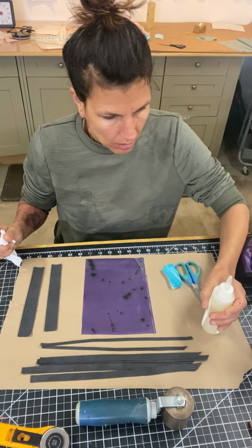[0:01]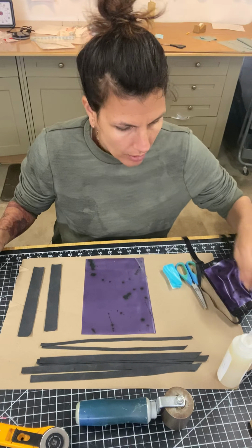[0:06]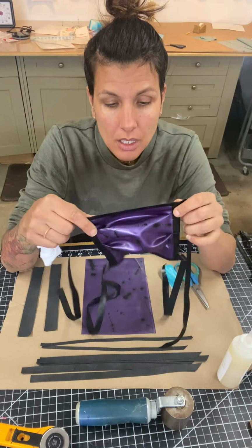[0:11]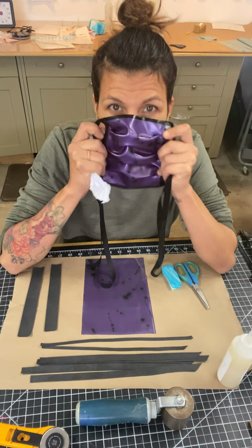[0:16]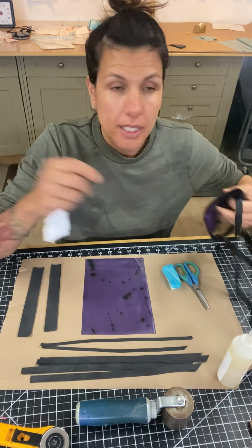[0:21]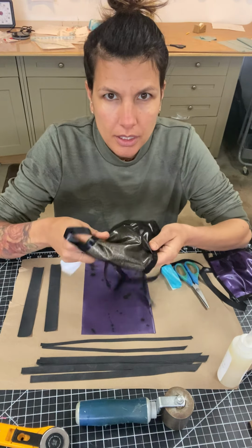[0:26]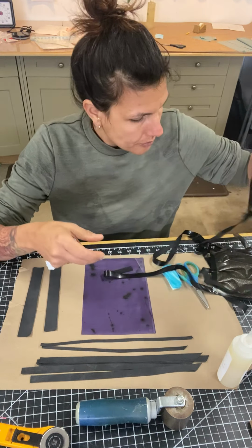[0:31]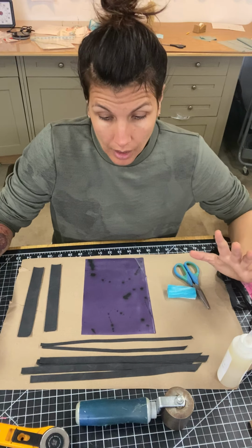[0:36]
Hi guys, I am going to walk you through how to make one of our medical masks, which I do sell on our website. It's a product that I've had for many years, but now everybody is in need of one. On our website you can pick any color. There's a glitter one, pink marble, but for those of you crafting, I'm going to show you how to make one on your own.
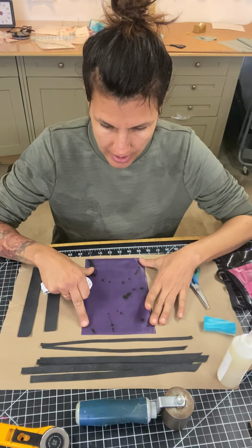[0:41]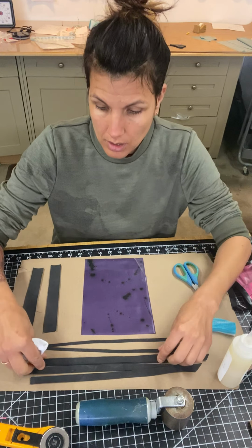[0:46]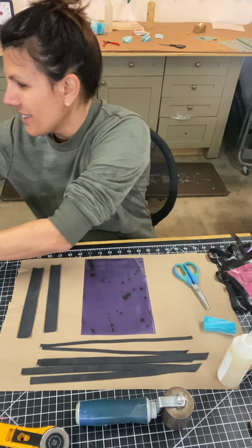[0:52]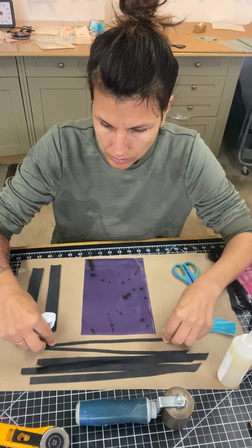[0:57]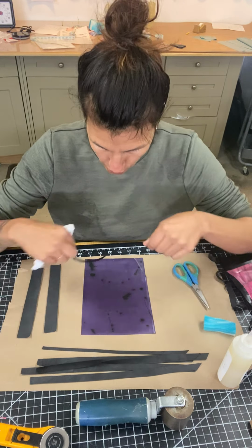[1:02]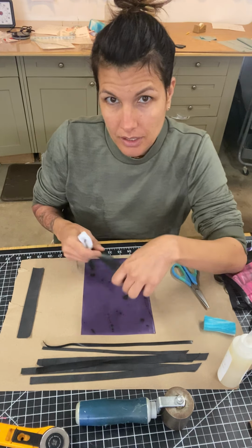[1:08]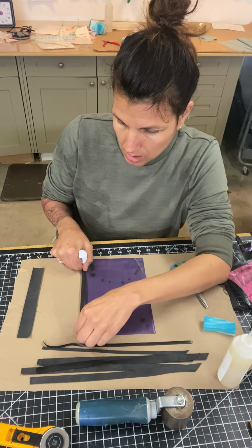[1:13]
What you need is a piece of latex that is approximately 8 to 9 inches by 6 inches, and some strips for the straps. These are 1/2 inch by about 12 inches, and you need 4 of those. I trim mine out just because I want it to look pretty, so I have 1/4 inch trim that's going to go on the top and the bottom. And then we're going to pleat this, so I'm also going to have a 1 inch strip that I will sandwich in the pleats.
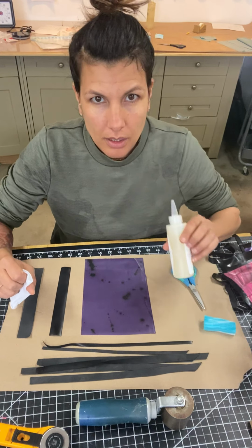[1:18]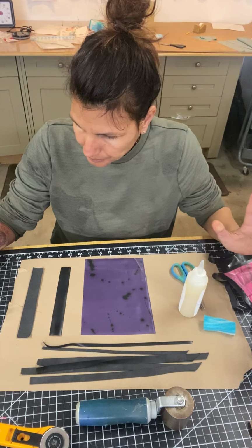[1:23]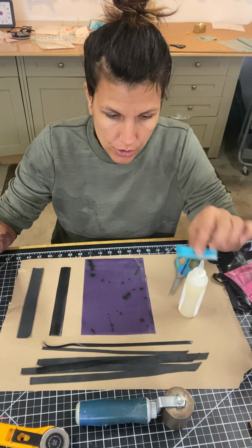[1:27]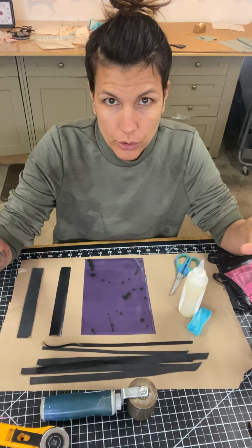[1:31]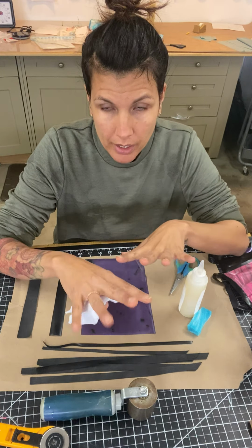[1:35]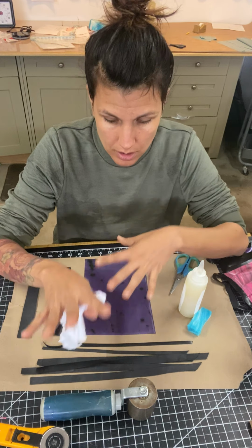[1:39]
You also need some latex glue, which I do sell on the website, scissors, a paintbrush or sponge, and some sort of roller. I do have a how-to video on the basics of gluing and repairs, so you can watch that first, but this video is just how to construct one of these.
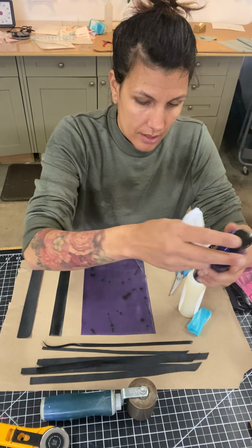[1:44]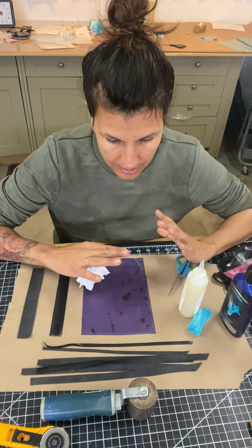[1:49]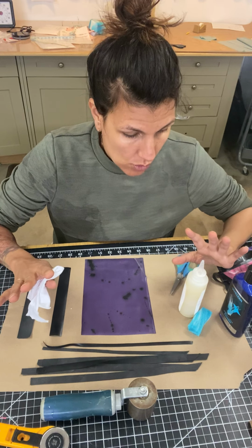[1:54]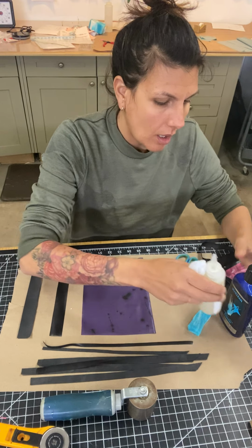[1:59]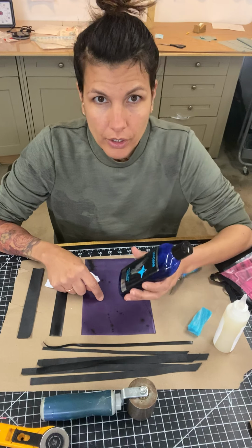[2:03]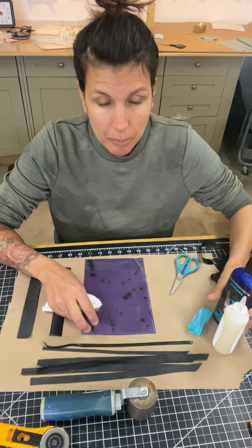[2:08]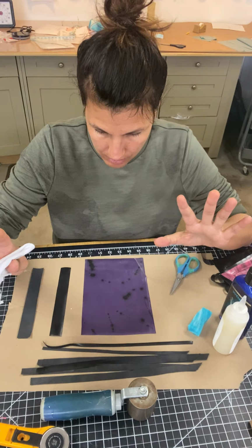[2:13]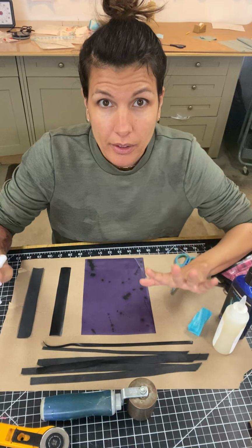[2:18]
Another good thing is this is all latex, which is a medical grade latex. It's the same factory that makes any kind of latex or rubber for fitness, medical use, fashion. And the good thing about latex is that it can be washed. There is an antibacterial wash that you can use on the latex, so these masks are reusable. Now, I am not going to say that this is going to protect you from everything, but it's better than nothing.
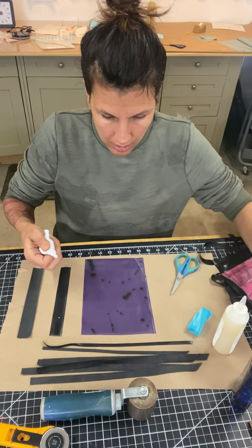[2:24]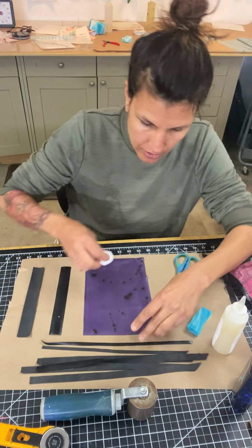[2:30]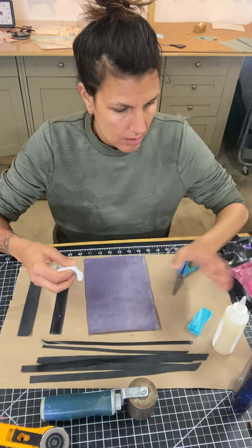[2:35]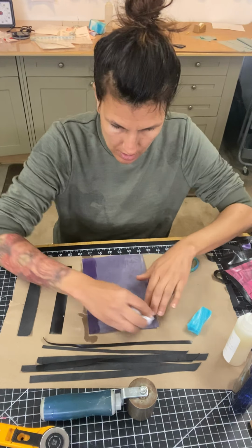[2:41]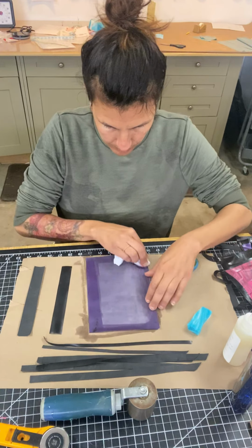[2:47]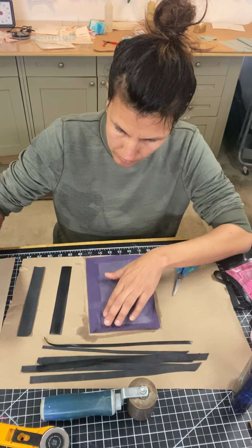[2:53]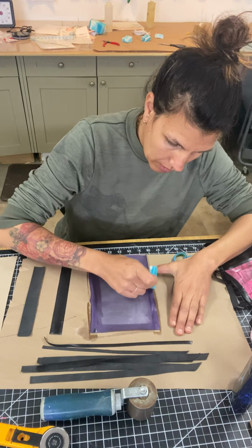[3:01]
So here we go. You're going to want to clean the seams. Anywhere we're going to glue, we're going to clean it. I use acetone. You can use raw acetone, rubbing alcohol, anything that cleans the surface and gets all the powder off of the latex itself. And then I'm going to put my glue down. On the 6 inch side, I'm going to do a 1/2 inch seam of glue on each side.
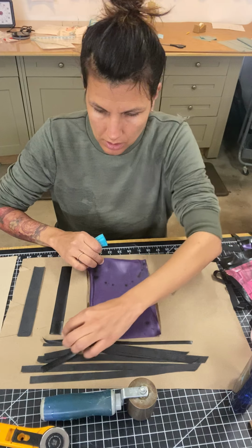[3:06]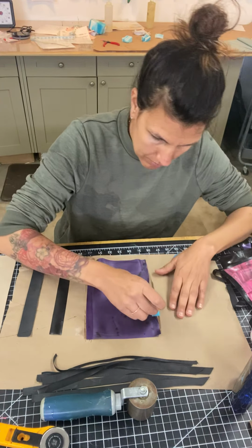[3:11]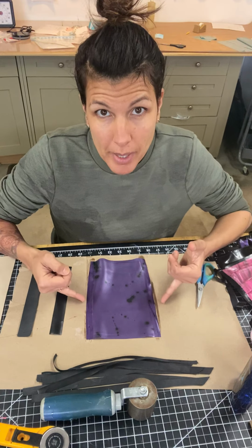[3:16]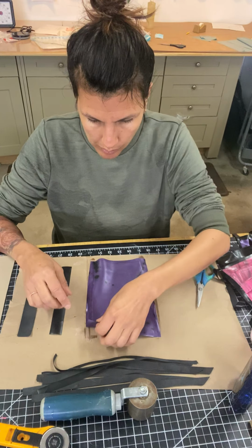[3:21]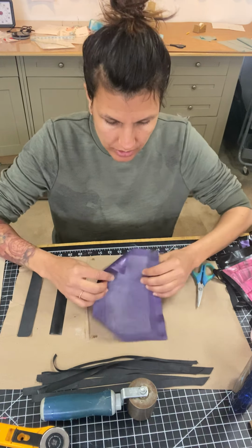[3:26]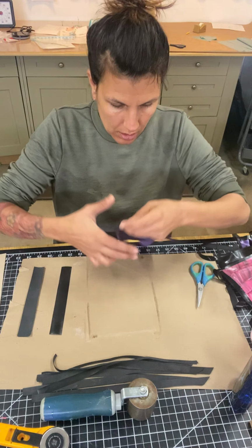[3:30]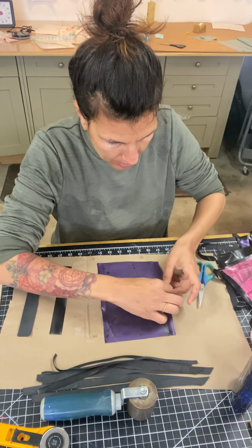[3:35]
And then I'm going to flip it over and do the same thing. So now the 6 inch side has glue front and back, and that's where we're going to do the pleats for the mask. Once it's not wet, but still tacky, I'm going to find the middle, and I'm going to put my first pleat just above that. You can mark it with a pencil. I just eyeball it.
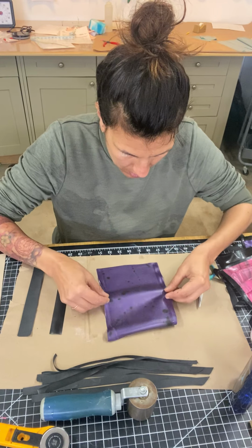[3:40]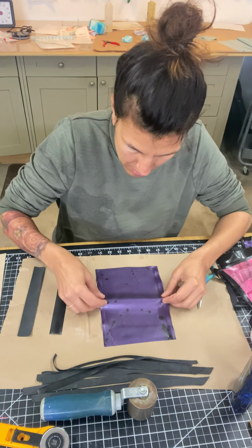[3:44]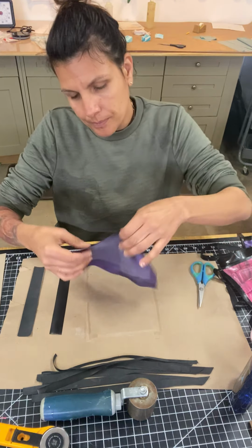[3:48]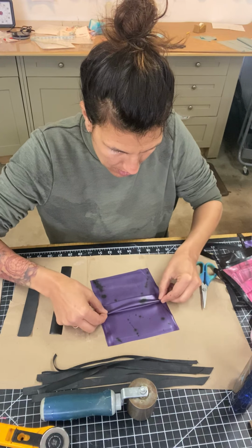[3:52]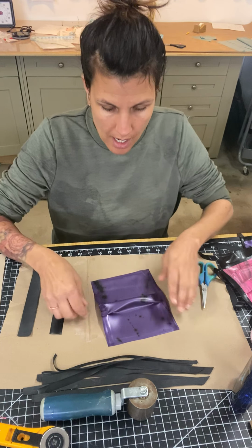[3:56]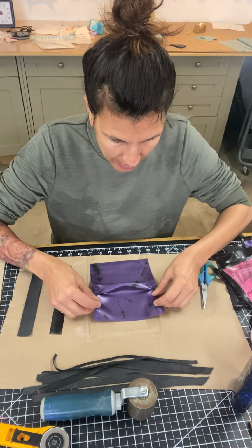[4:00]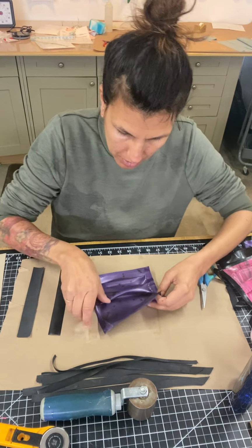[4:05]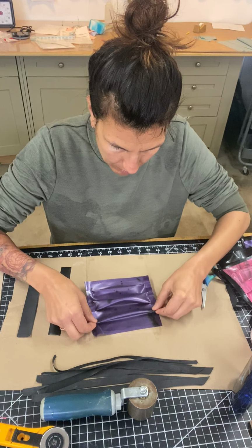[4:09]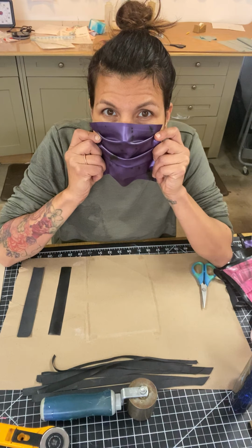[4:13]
I do maybe a 1/4 inch, 1/2 inch pleat, and I do them going towards the bottom and the top. Then I do one above that and one below. And now we have our pleated mask that we can put trim on.
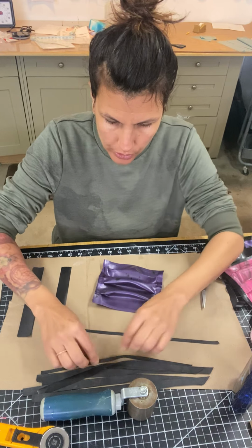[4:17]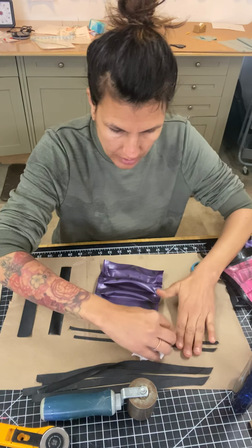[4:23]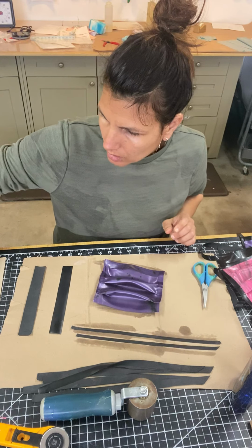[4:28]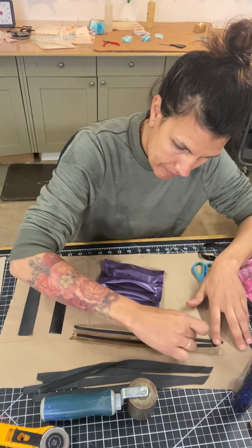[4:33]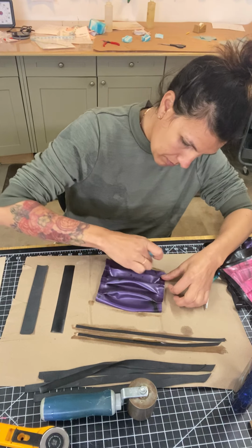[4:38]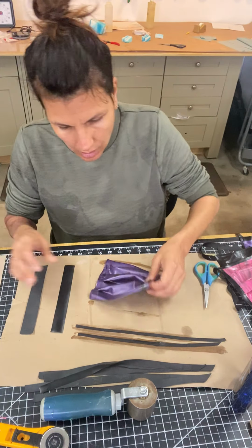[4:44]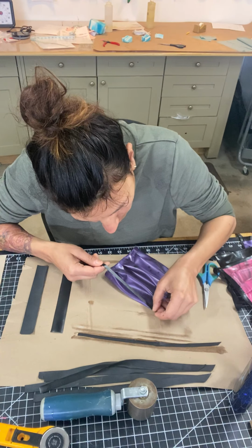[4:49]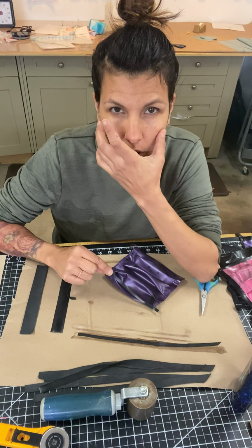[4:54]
So I'm going to take my 1/4 inch trim. I'm going to clean the surface that I'm going to use to glue it. Some more glue. Apply the glue to the trim, and then apply the glue to the mask. I'm going to place this down in the corner, and I'm going to pull a little bit, which will help the mask shape to your face.
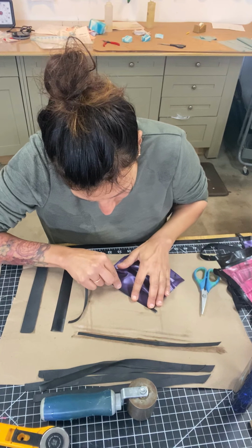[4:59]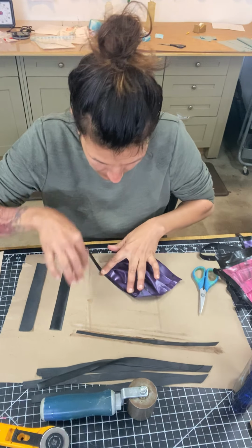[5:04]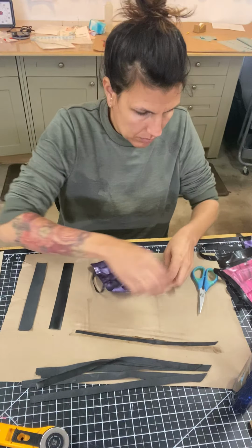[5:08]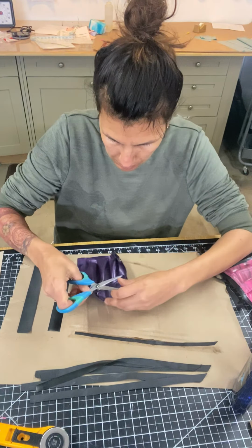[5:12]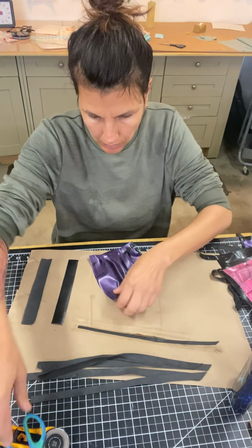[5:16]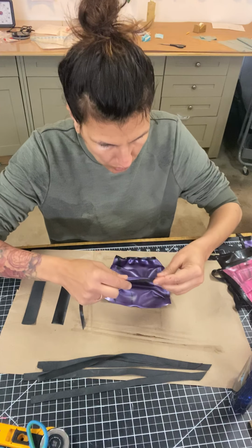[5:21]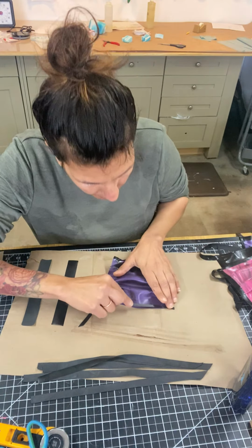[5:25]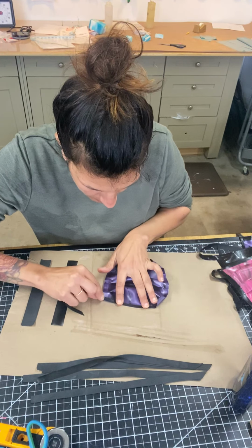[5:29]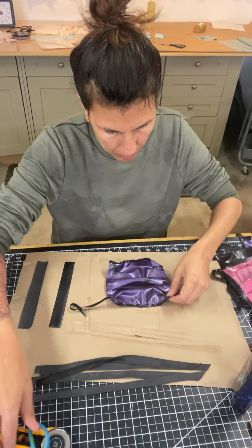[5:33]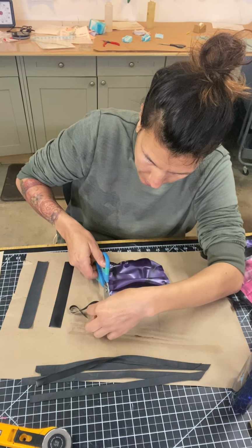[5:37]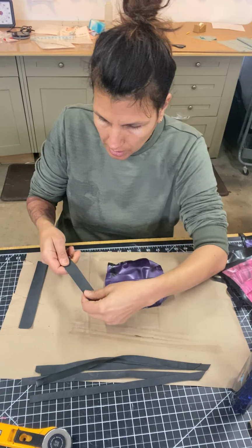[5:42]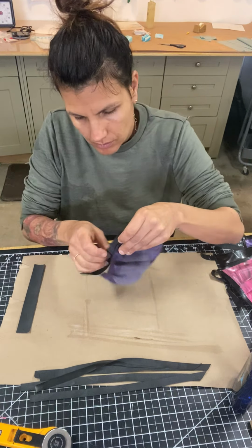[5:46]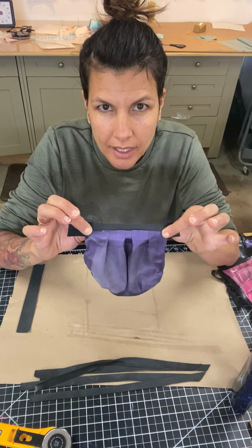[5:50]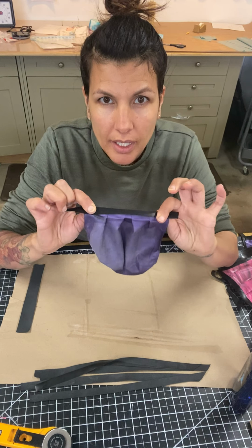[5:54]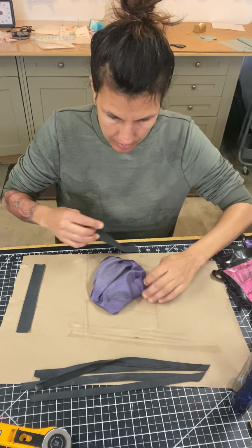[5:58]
Then I'm going to roll it and trim it. Same thing for the bottom: 1/4 inch trim, pulling slightly, trimming it clean. And now I'm going to clean and glue my 1-inch strip so it overhangs, covering the pleats, and then we are going to fold it over and cover both the front and back of the pleats.
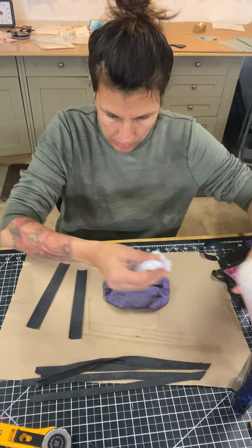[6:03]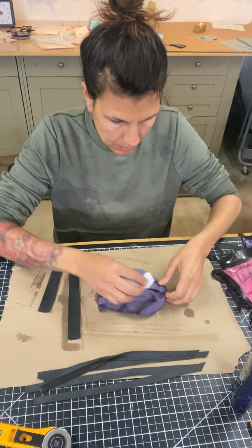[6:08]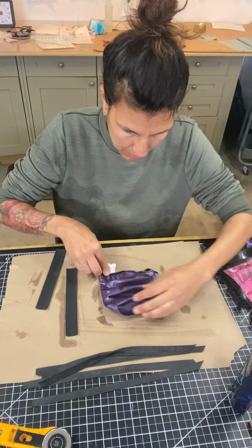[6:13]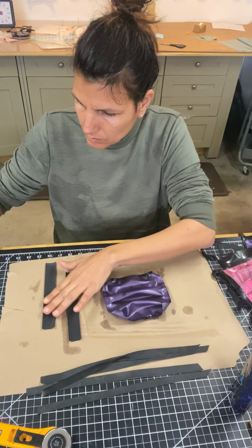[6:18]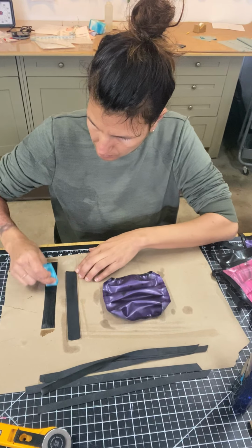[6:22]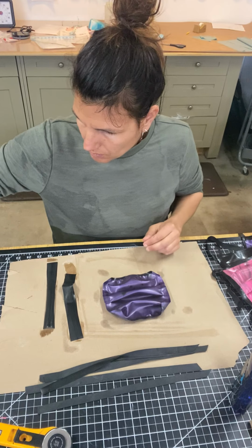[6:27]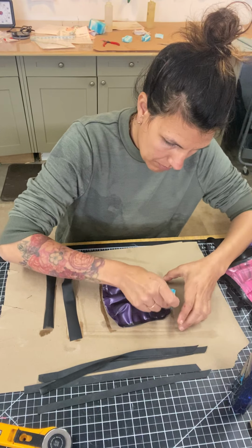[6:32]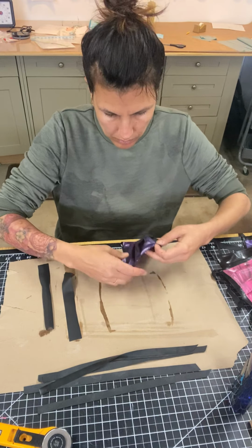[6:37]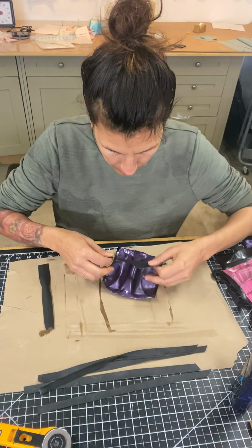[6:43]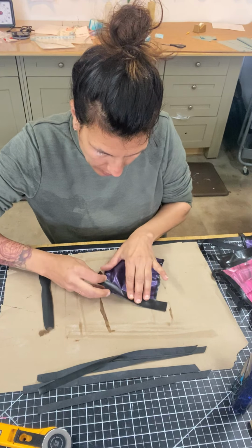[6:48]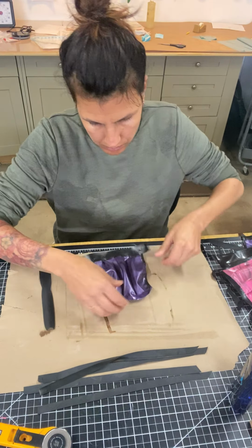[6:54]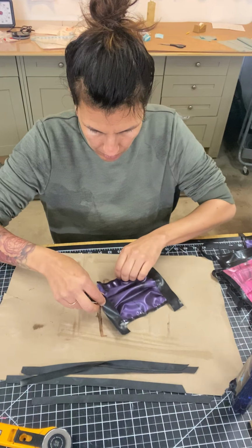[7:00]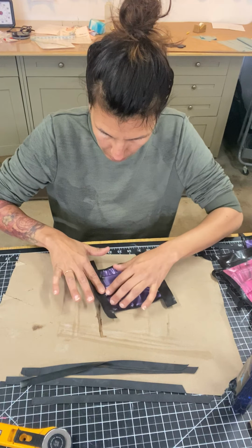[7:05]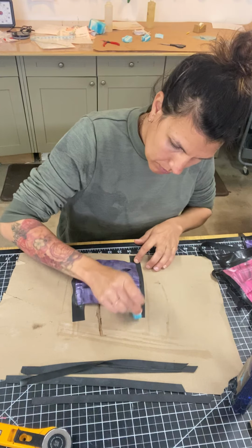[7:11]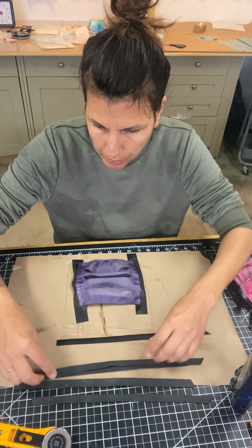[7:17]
All right. So I'm going to take my 1-inch strip, cover the front where the pleats are, fold it over, place some more glue, and then now I can prep my straps.
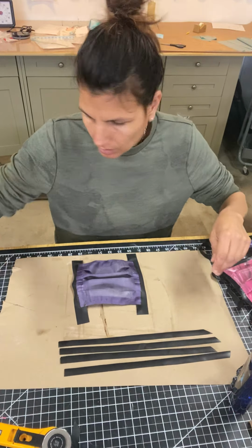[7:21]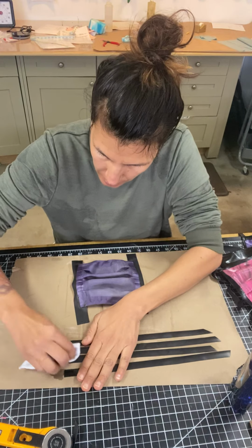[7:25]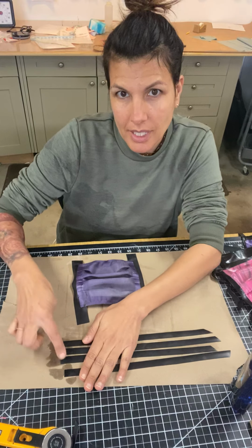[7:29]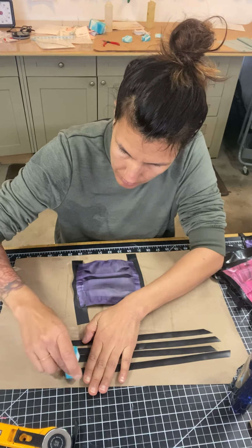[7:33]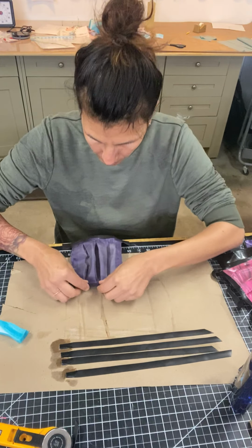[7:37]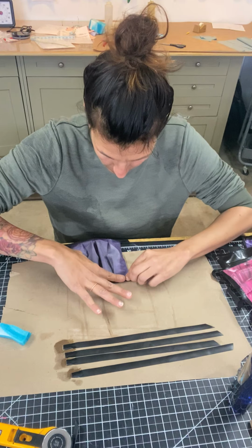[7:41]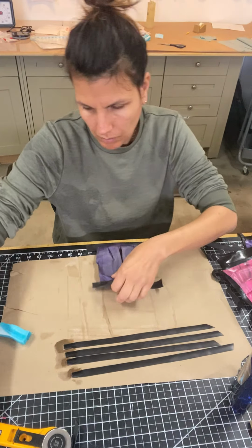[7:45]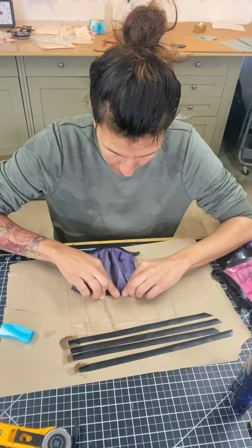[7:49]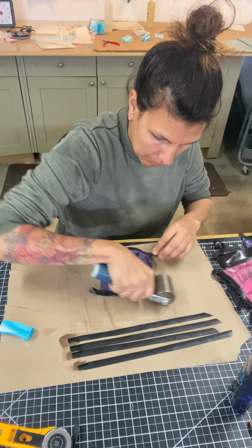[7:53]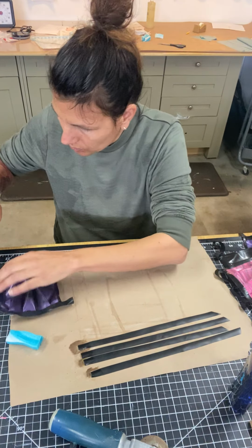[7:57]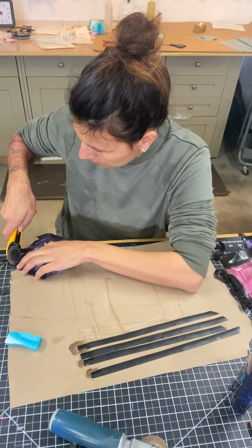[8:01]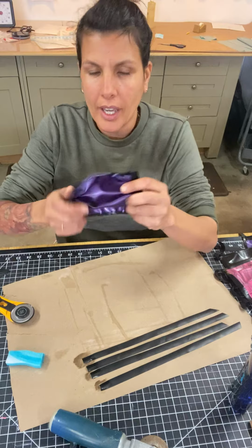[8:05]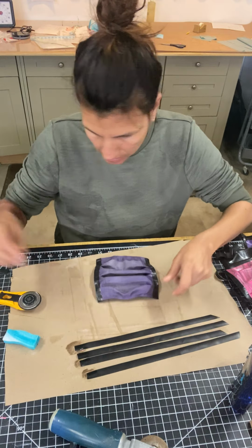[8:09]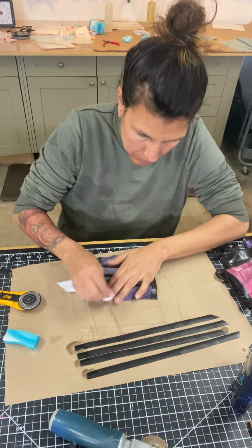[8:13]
What I want to do is clean and then glue where I'm going to be attaching it to the mask. I'm going to trim that clean so it's flush. So now I have the mask, and I'm going to attach the straps, and then we're done.
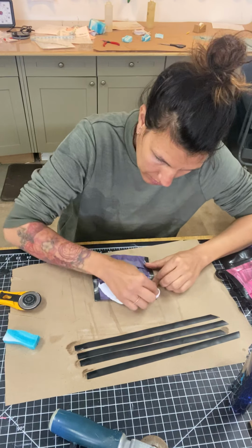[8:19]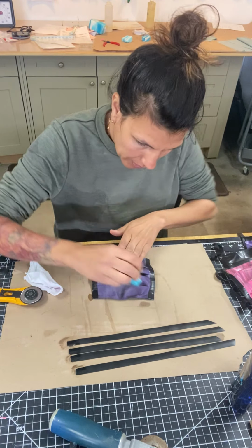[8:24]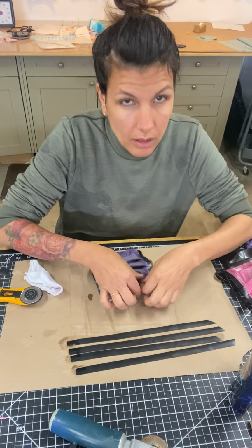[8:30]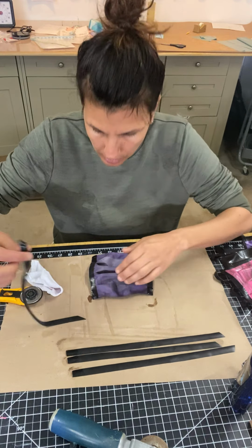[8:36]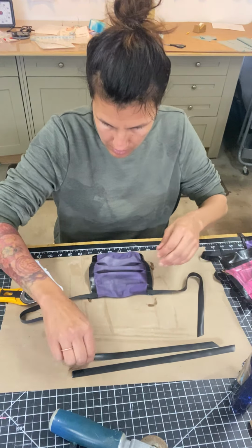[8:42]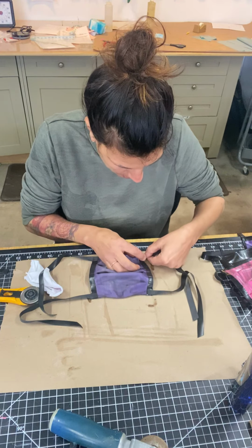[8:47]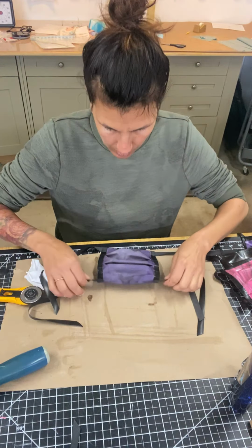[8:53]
We're at just under 9 minutes, so it doesn't take long to make one of these. And again, it's better than having nothing. It can be washed with antibacterial soap, and then you can reuse it instead of having a mask that you're constantly throwing in the trash. You could also clean it with rubbing alcohol if you have it. Not too bad.